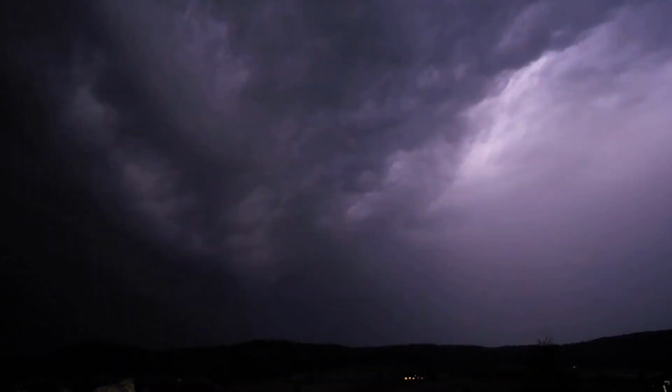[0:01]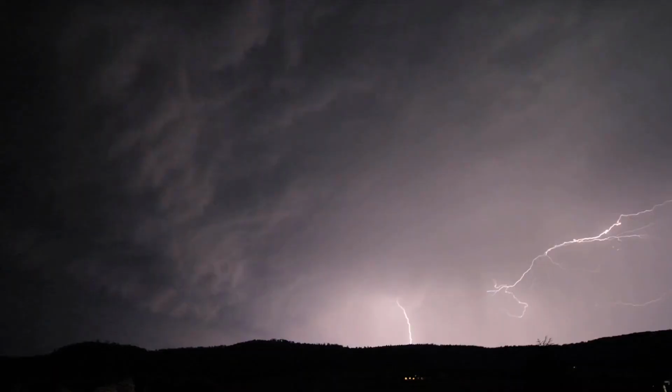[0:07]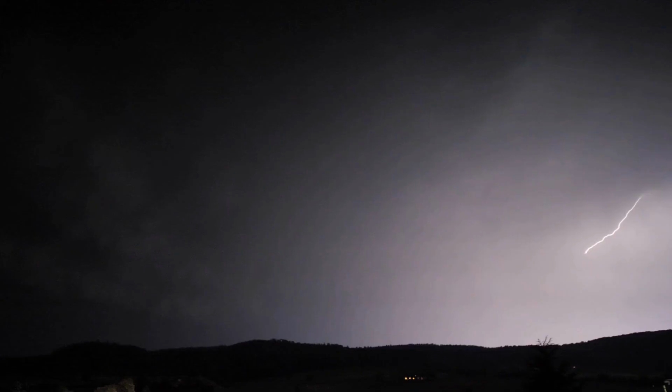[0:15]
To begin with, what actually happens chemically in the atmosphere when lightning occurs? Well, among other things, the immense energy generated by a lightning strike produces nitrogen monoxide from the nitrogen in the air, which then reacts further to form nitrogen dioxide.
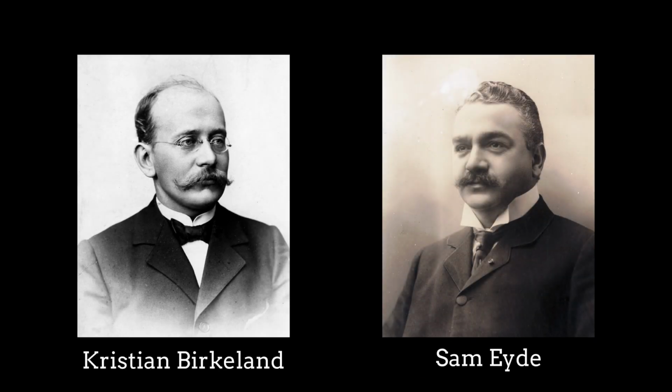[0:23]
In 1903, the Norwegian industrialist and scientist Kristian Birkeland and his business partner Sam Eyde took advantage of this process and developed a method for converting atmospheric nitrogen into nitric acid, which served as a basis for nitrate fertilizers.
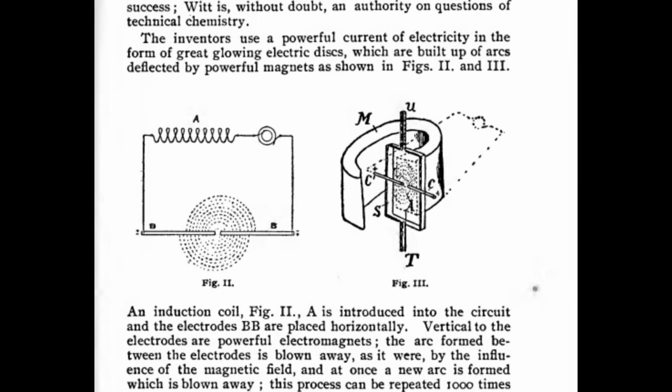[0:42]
An electrical arc was formed between two coaxial water-cooled copper tube electrodes powered by a high-voltage alternating current of 5 kV at 50 Hz. A strong static magnetic field generated by a nearby electromagnet spread the arc into a thin disk by the Lorentz force.
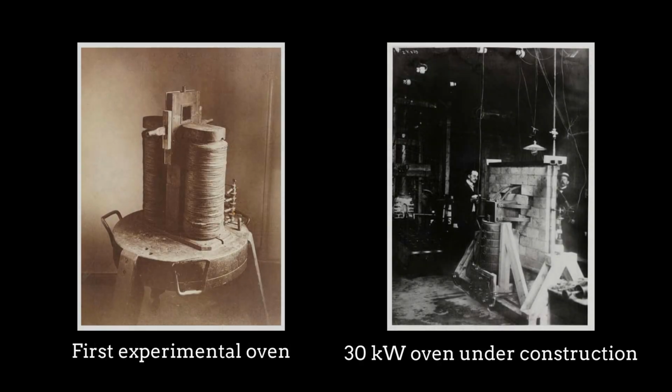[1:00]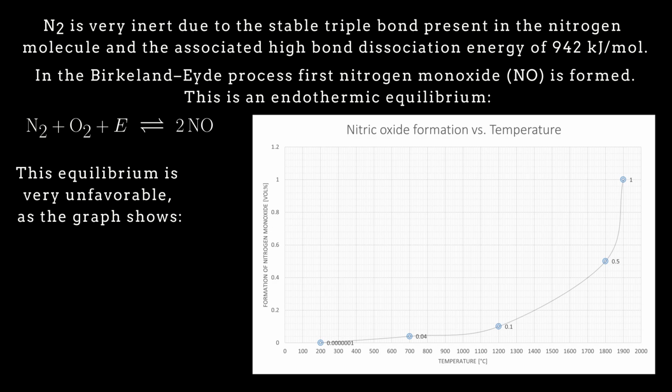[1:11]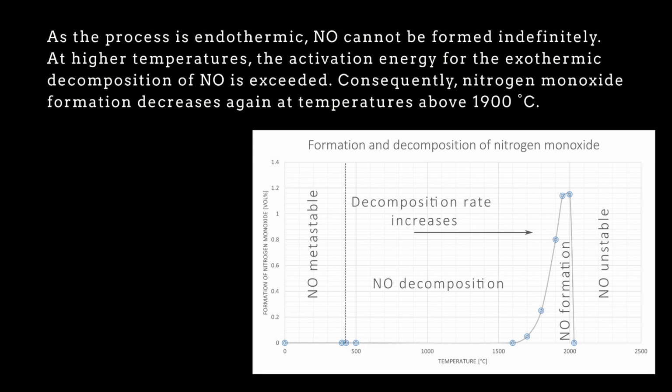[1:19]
Before we start building a fully automatic and programmable Birkeland-Eyde device, let's first take a closer look at what actually happens here chemically. As can be seen here, arc temperatures above 1900 degrees Celsius are rather counterproductive, which is remarkable.
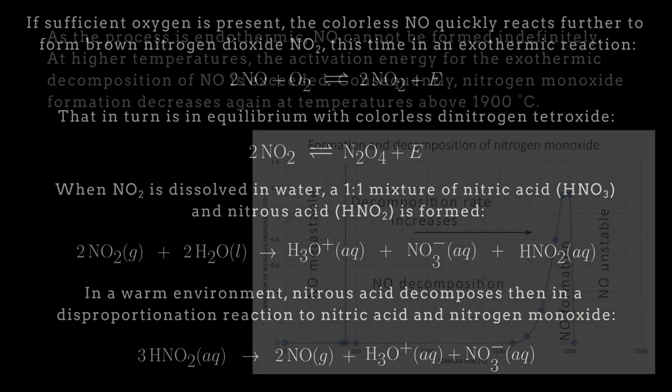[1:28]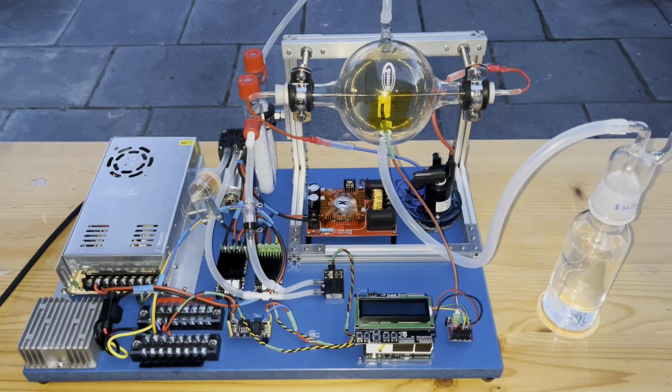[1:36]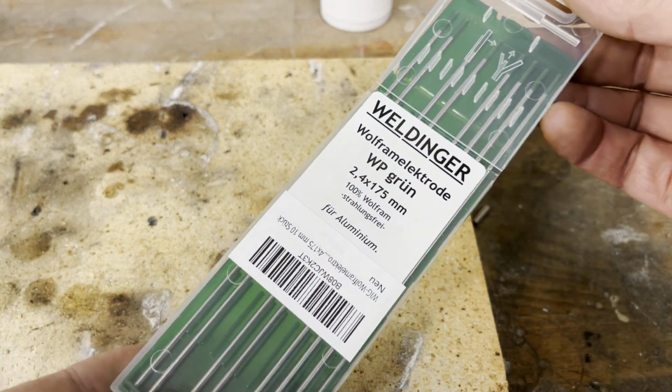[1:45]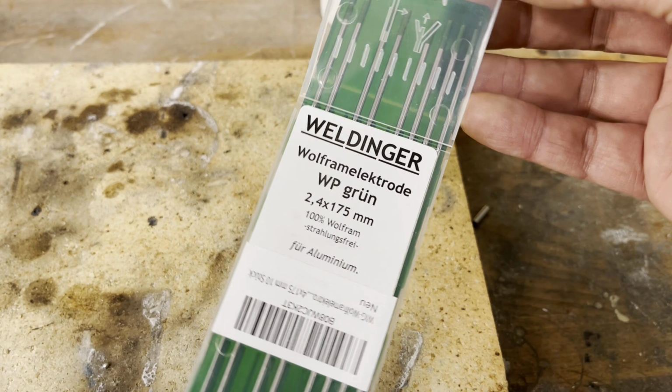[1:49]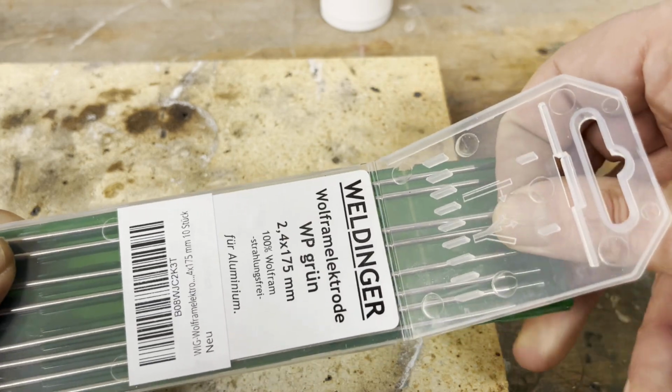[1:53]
Okay. Now that the dust has settled, I will start by showing you the device I built. I began the construction with the electrodes, which consist of tungsten welding electrodes. Tungsten is the chemical element with the highest melting and boiling point.
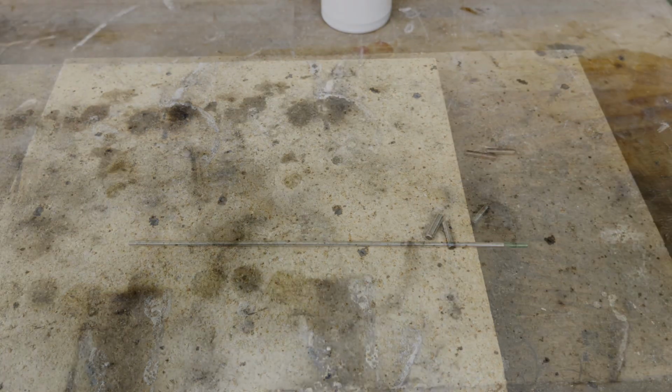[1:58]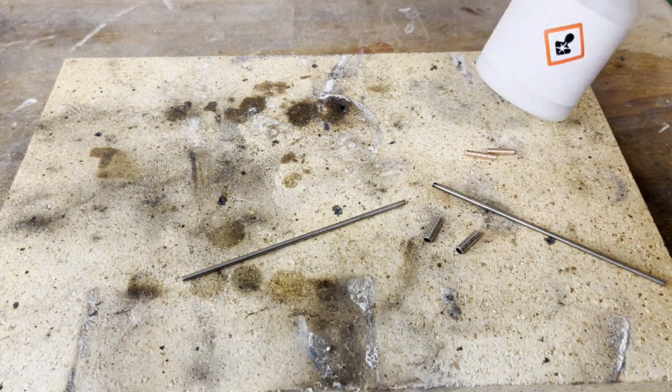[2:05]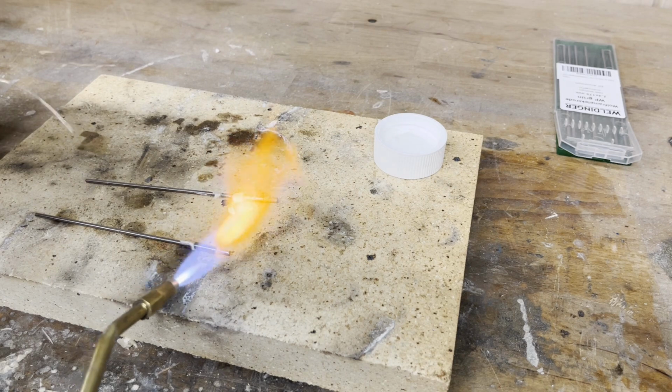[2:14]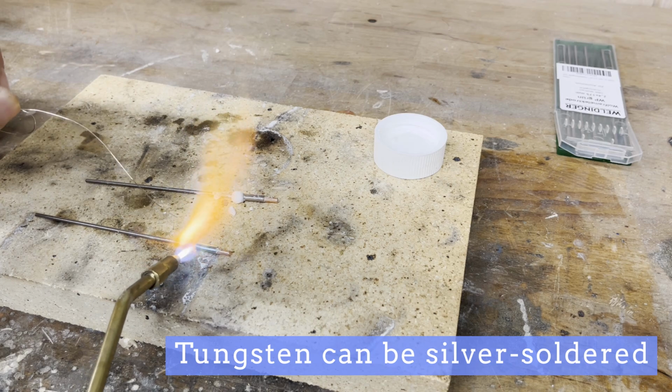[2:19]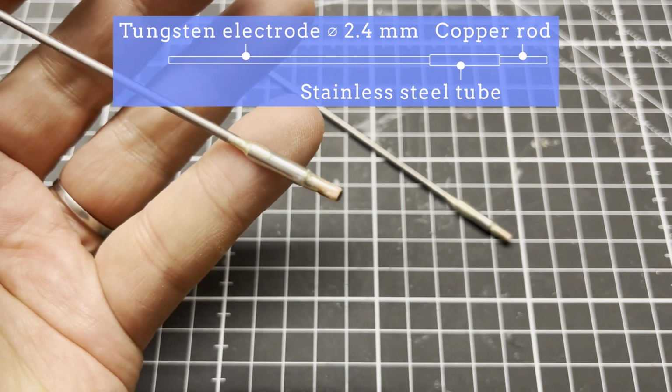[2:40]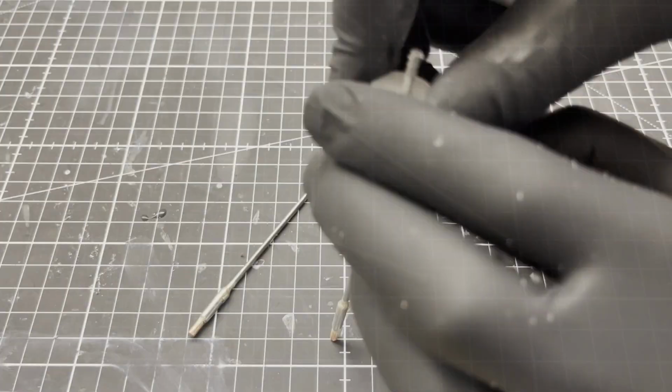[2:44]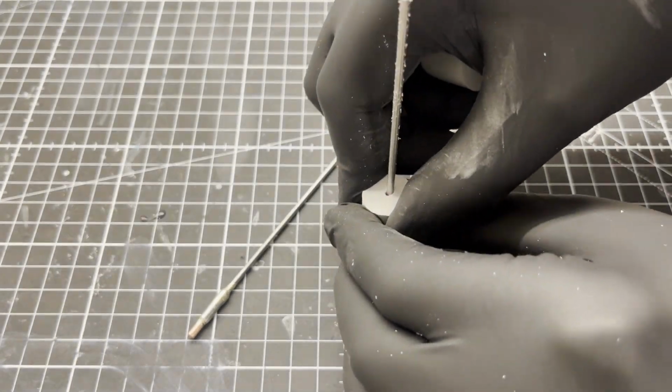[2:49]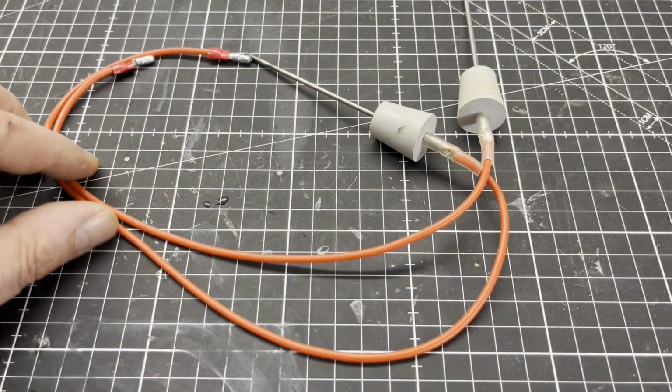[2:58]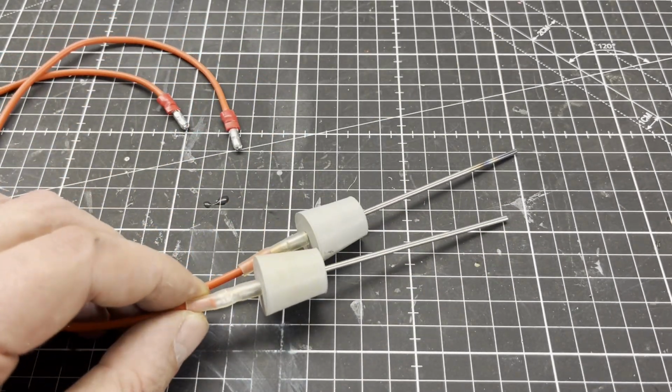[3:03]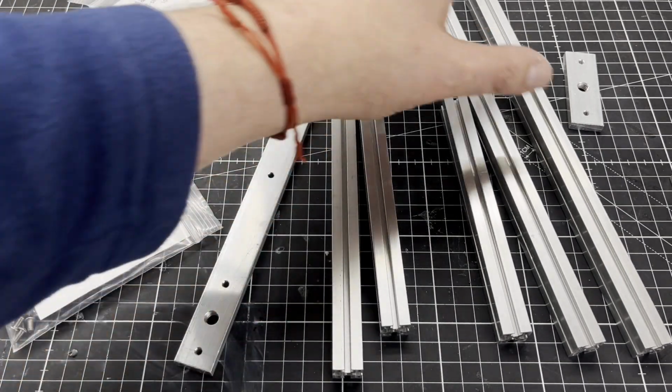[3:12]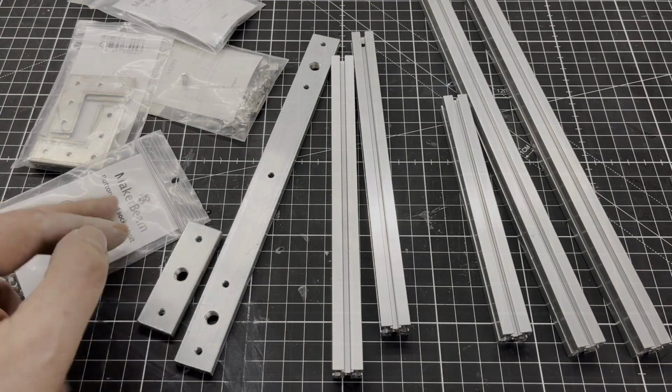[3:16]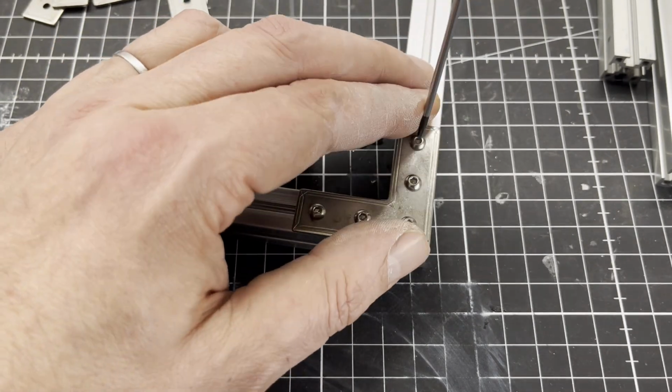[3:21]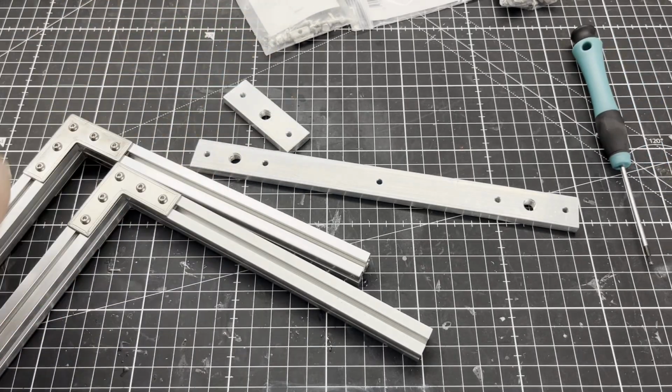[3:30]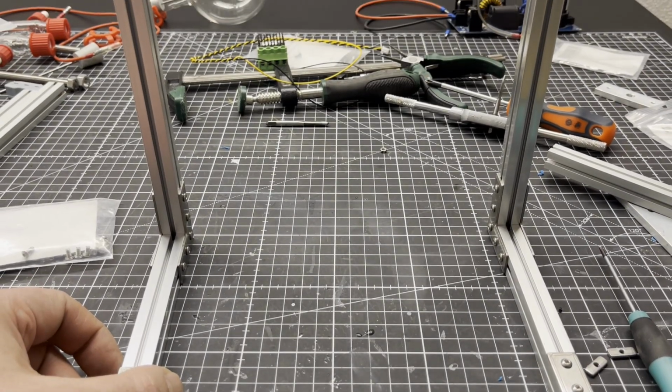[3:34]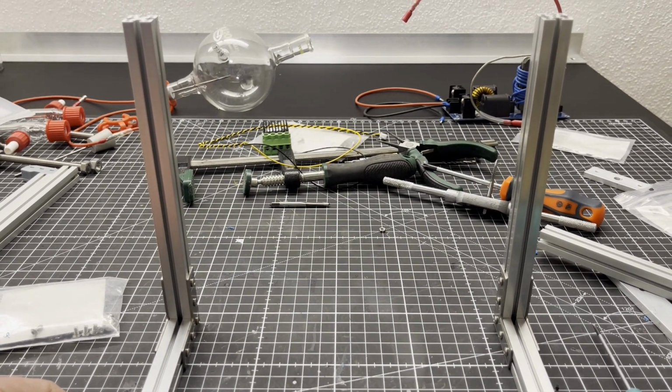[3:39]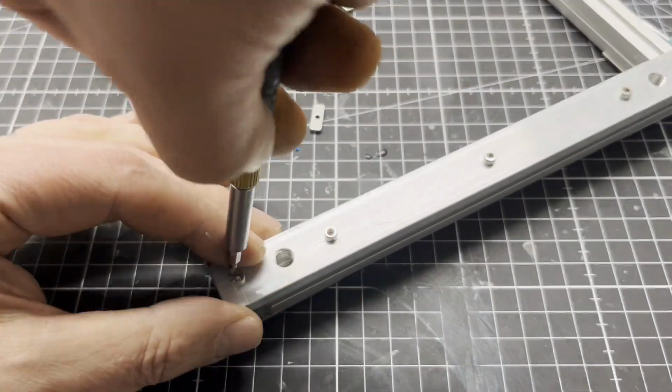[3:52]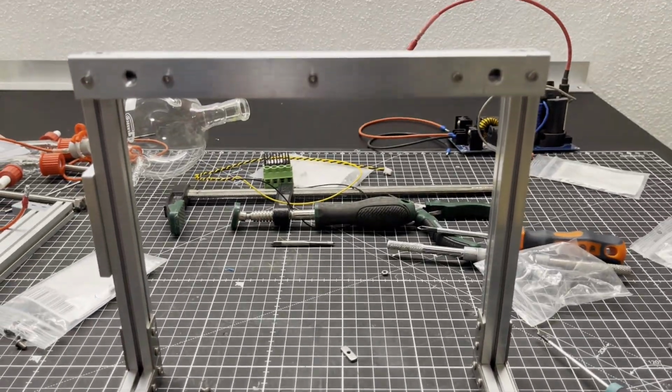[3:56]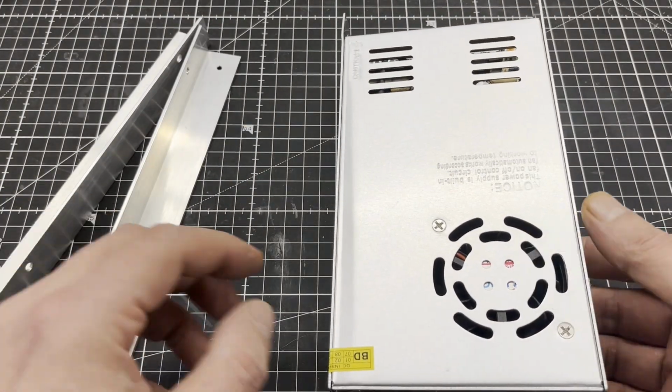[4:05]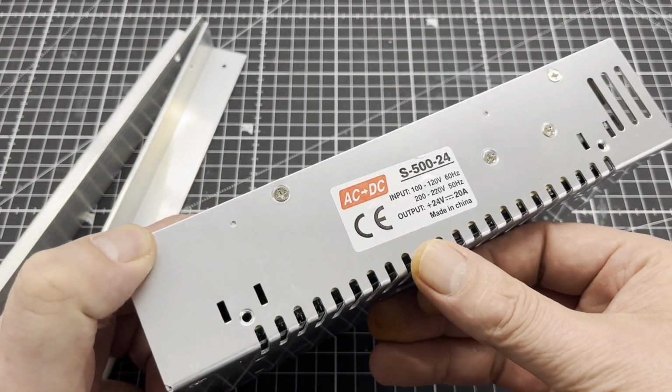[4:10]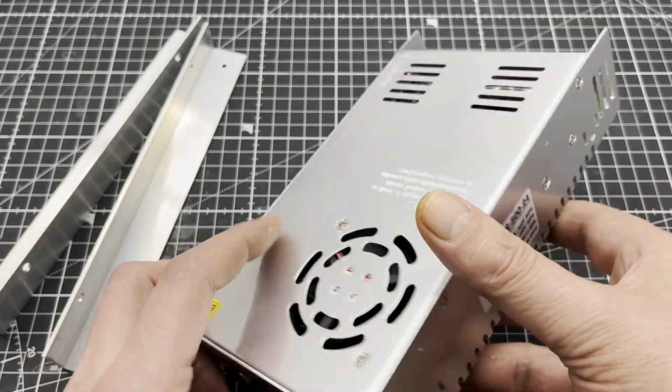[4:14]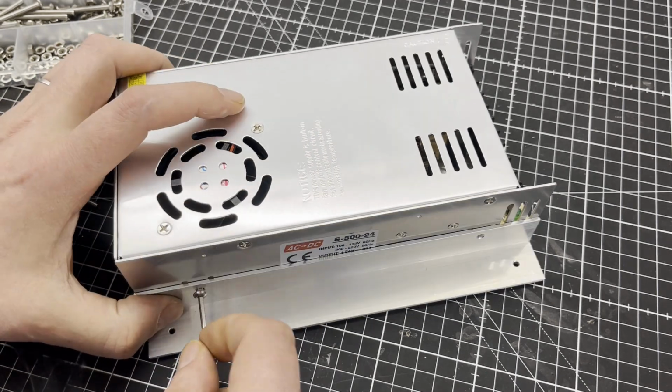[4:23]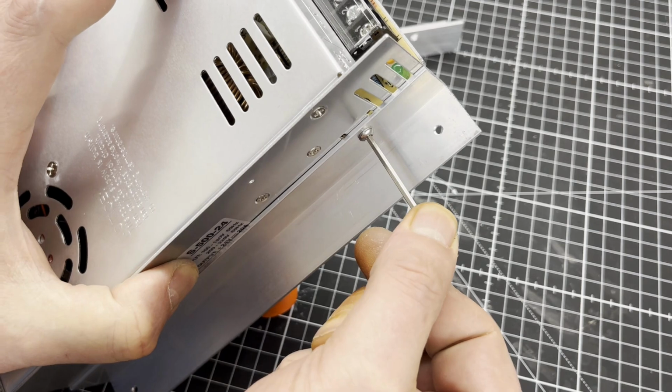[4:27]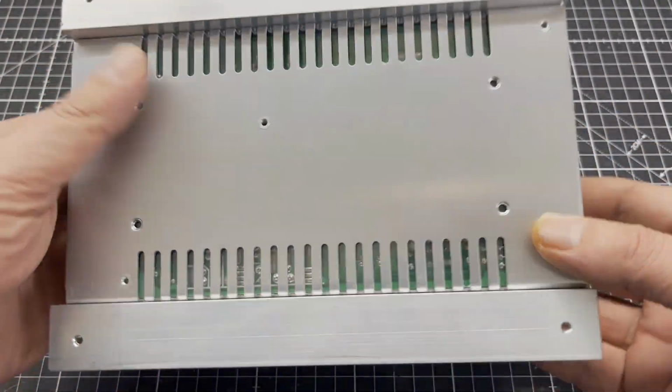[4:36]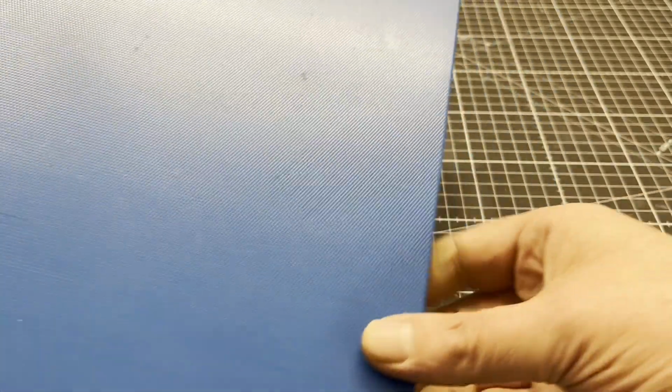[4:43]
To build the reaction flask mount, I used maker beam and two custom parts made from aluminum flat bar for the pipe clamps. And two more customized aluminium mounting brackets for the main power supply. A plastic kitchen board measuring 50 by 30 by 2 cm served as a base plate.
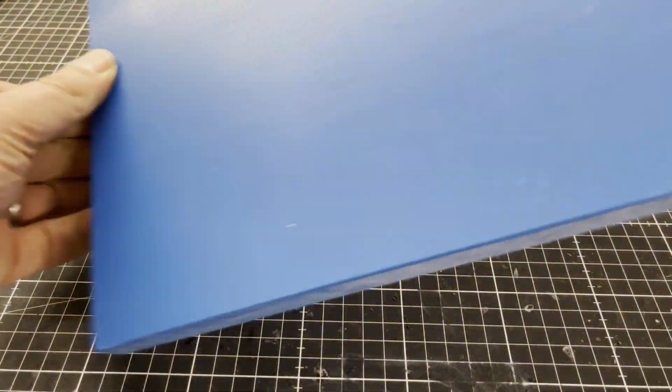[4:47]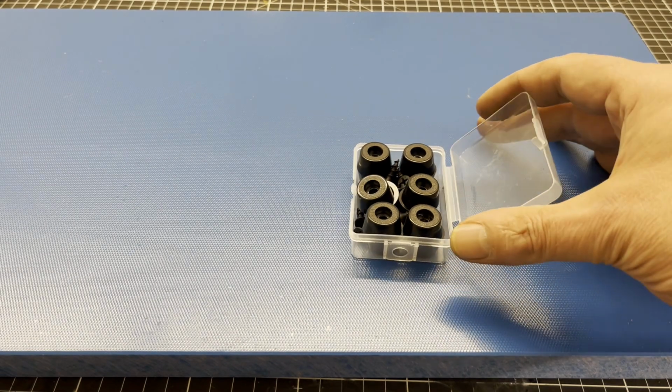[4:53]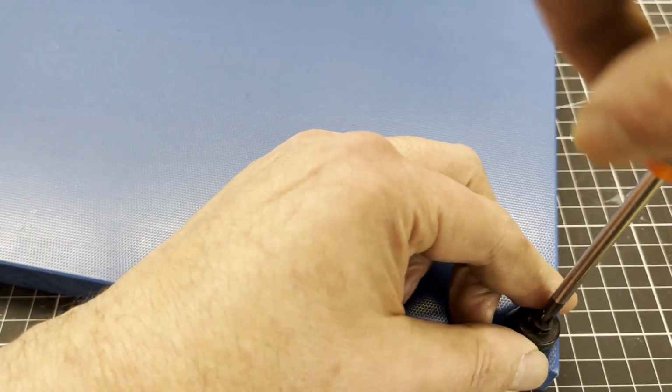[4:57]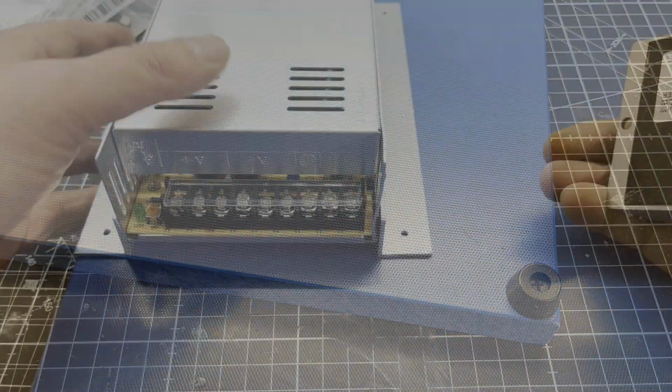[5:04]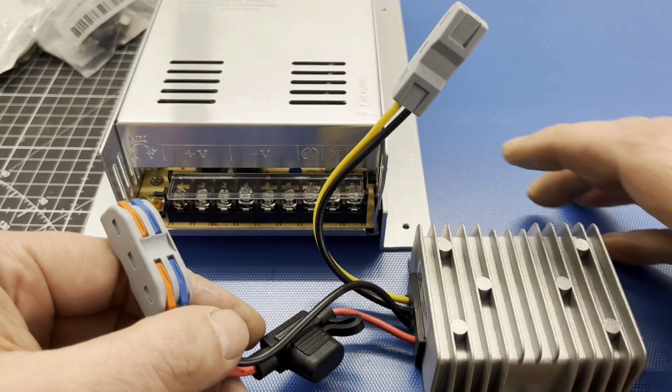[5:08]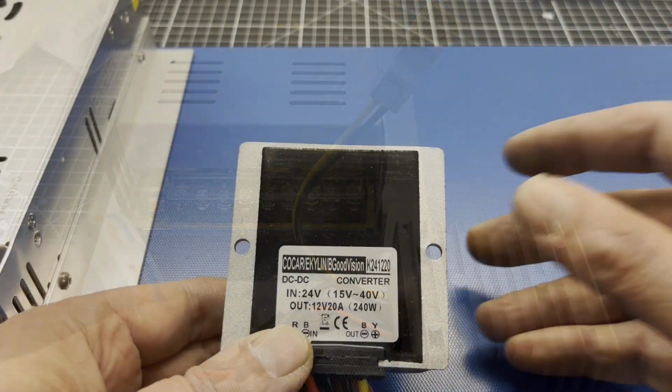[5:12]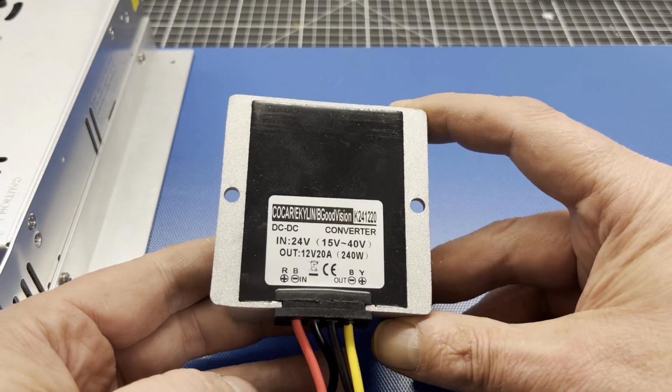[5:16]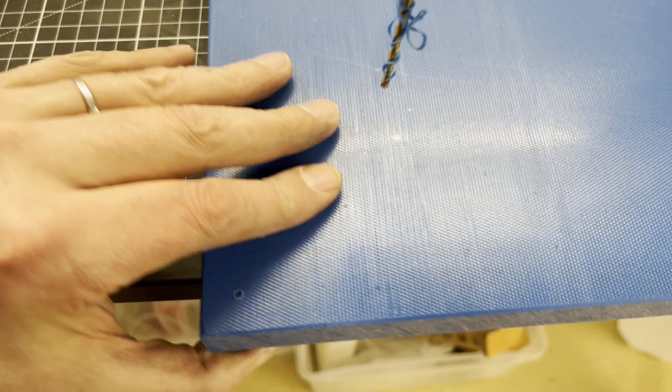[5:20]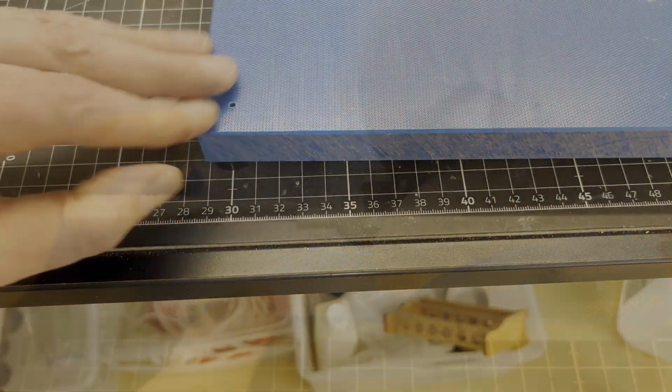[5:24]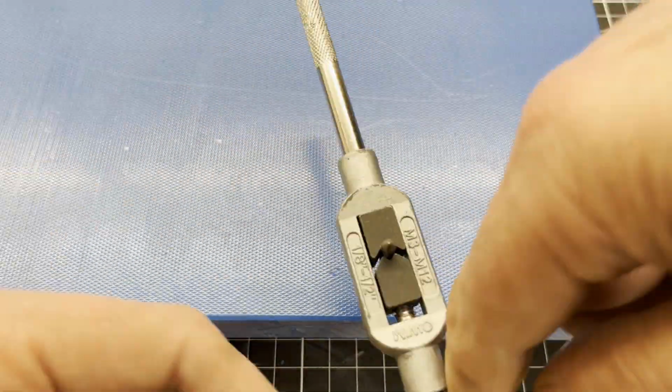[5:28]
This part here is a 24 to 12 volts DC-DC converter and a bit oversized, but I still had it lying around in my lab. The kitchen board, which is made of polypropylene, is easy to machine. Thread cutting is also no problem.
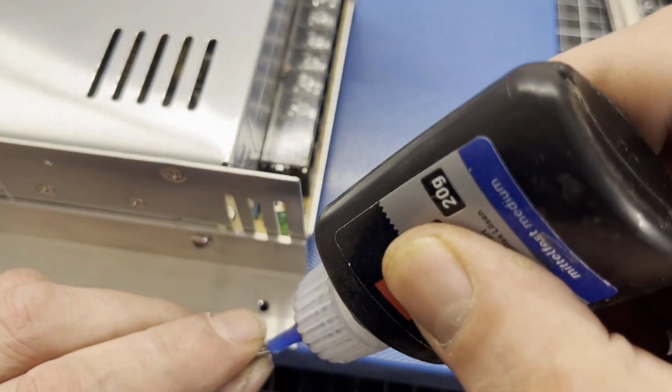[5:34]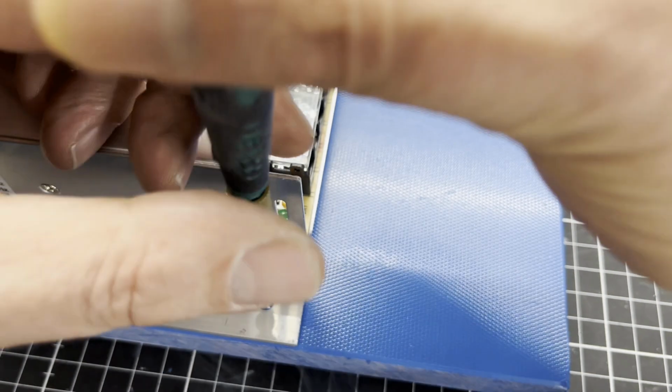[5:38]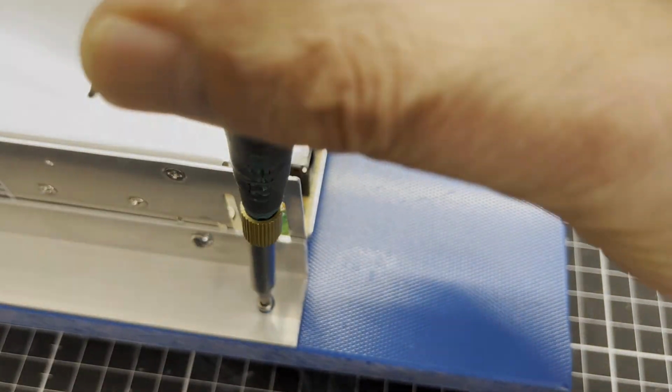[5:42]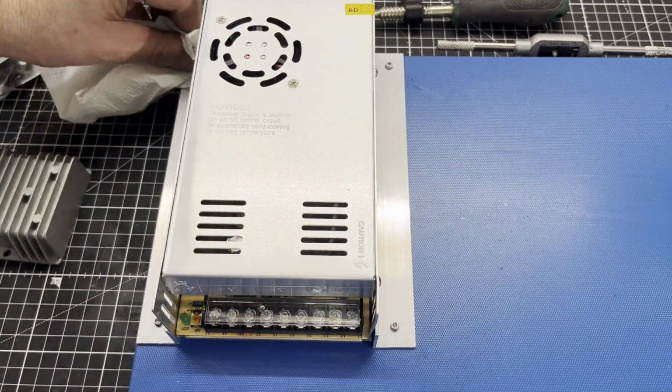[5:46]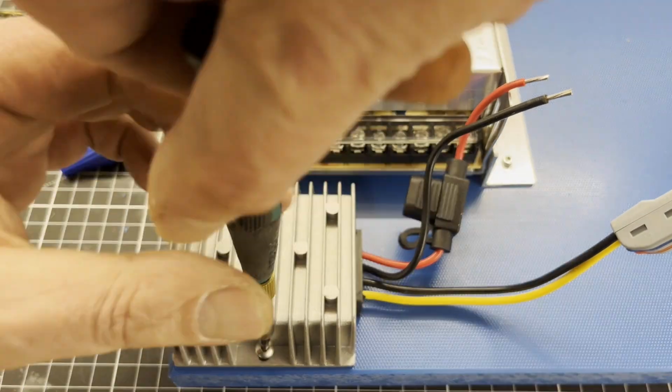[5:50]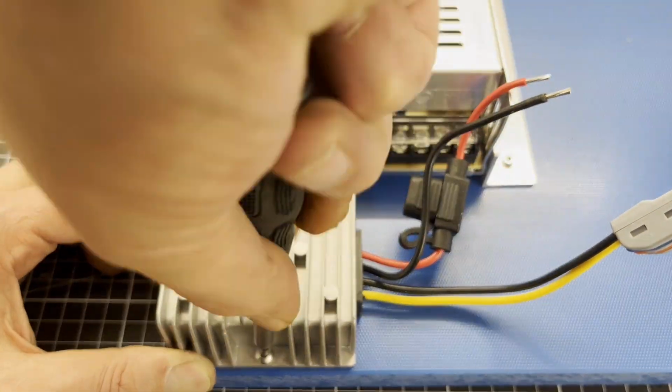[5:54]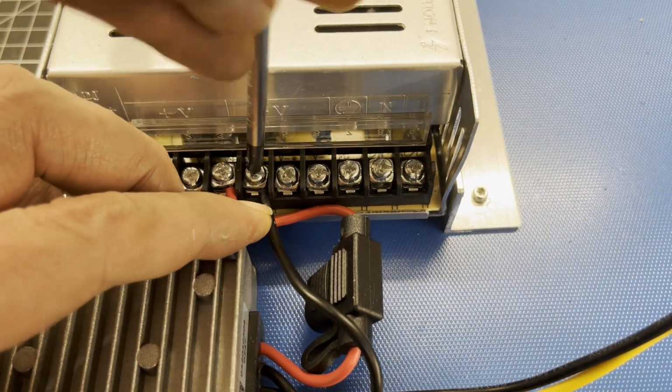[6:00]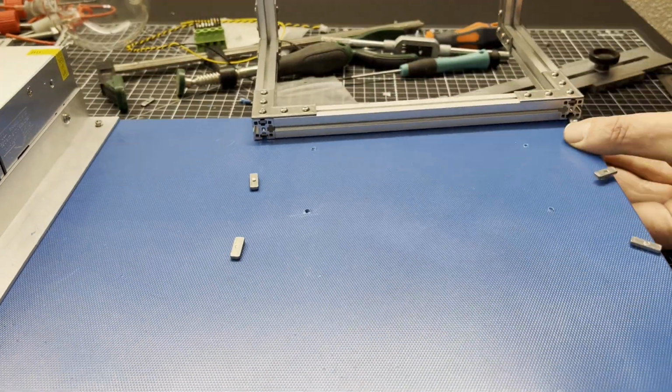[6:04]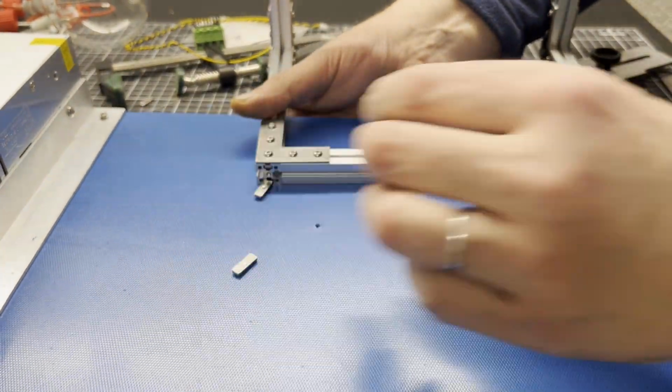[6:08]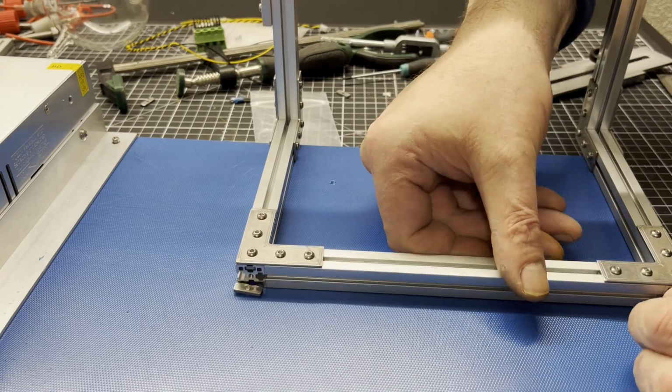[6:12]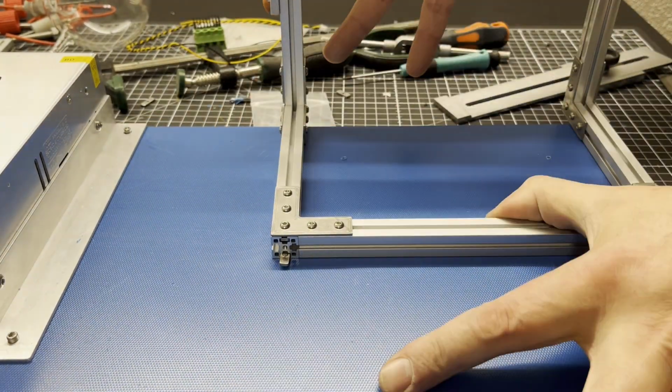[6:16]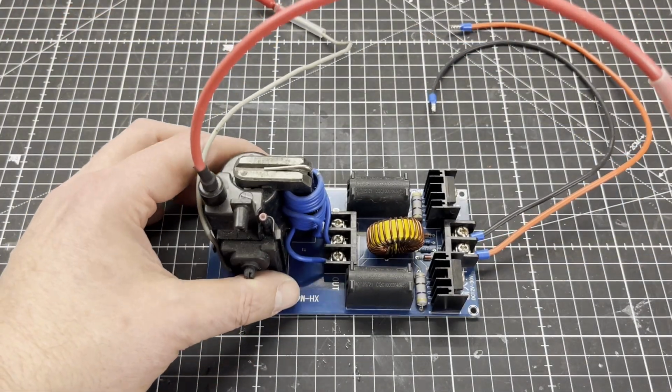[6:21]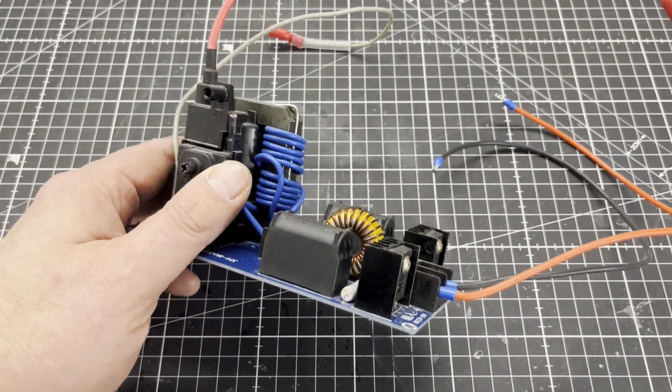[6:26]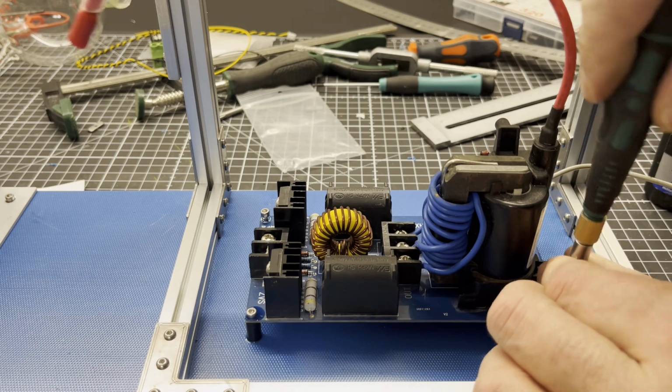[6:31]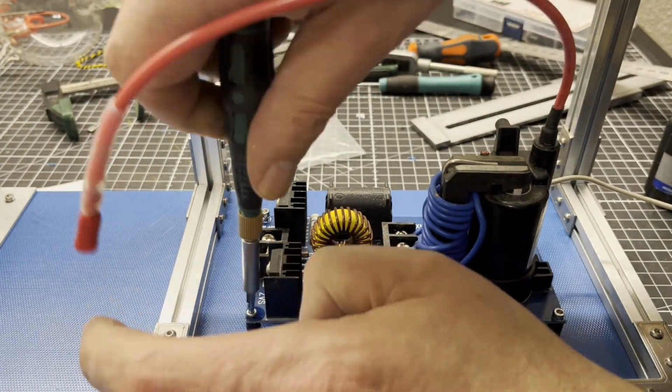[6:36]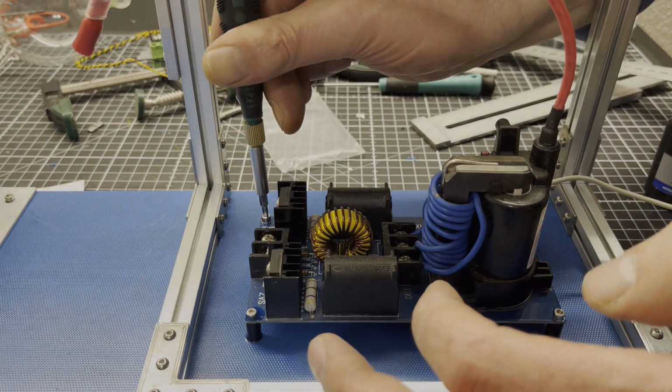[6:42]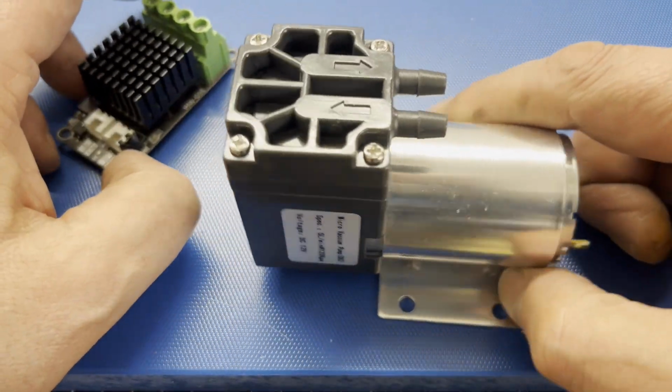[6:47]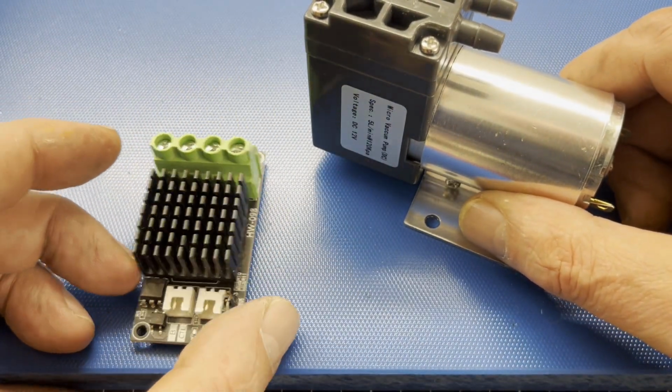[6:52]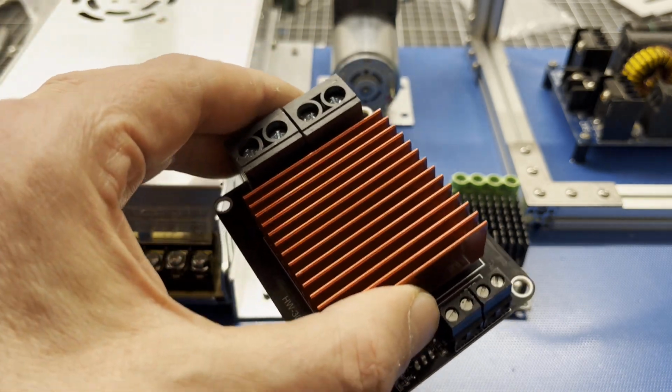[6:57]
I used a ZVS driver with a TV flyback transformer as a high voltage source. The circuit draws about 10 amps at 24 volts on the input side. Here you can see the air pump and a power MOSFET breakout board, normally used to control the heating bed of a 3D printer. Another power MOSFET drives the high voltage generator.
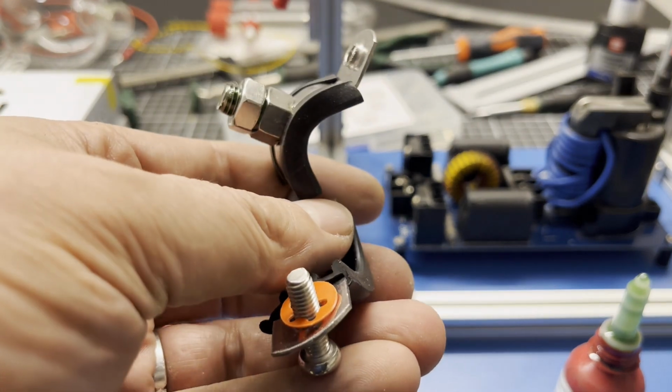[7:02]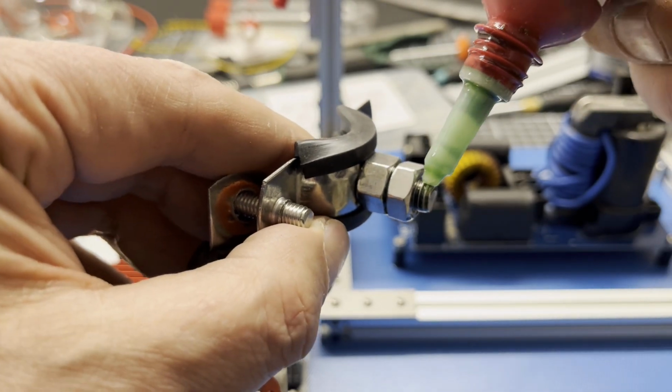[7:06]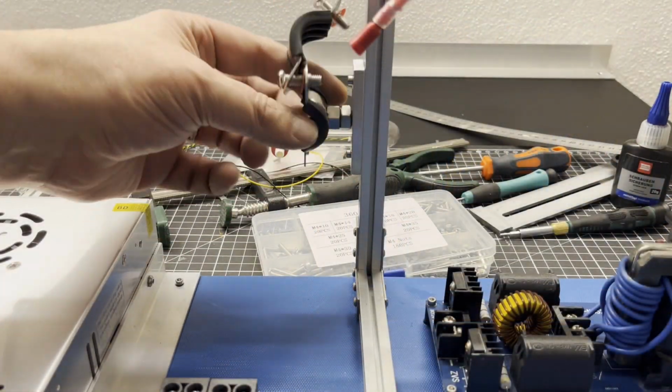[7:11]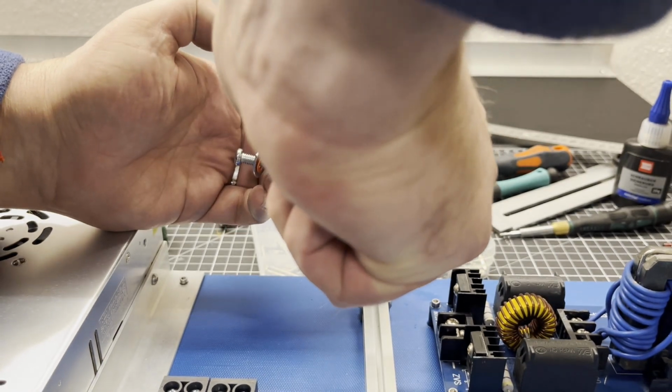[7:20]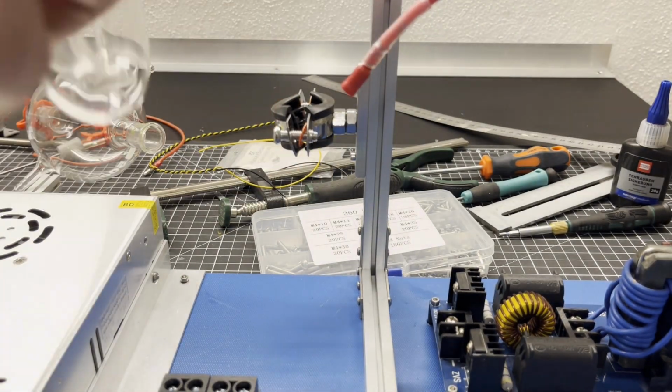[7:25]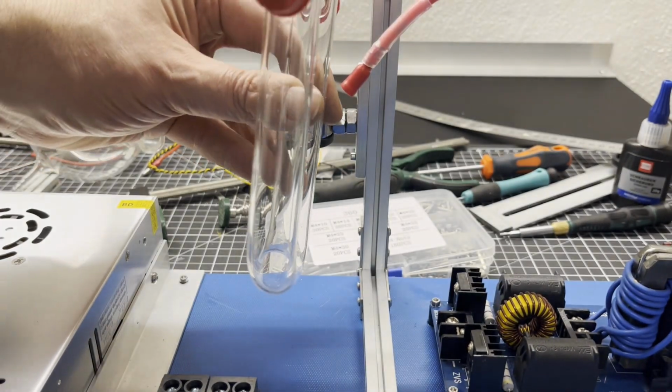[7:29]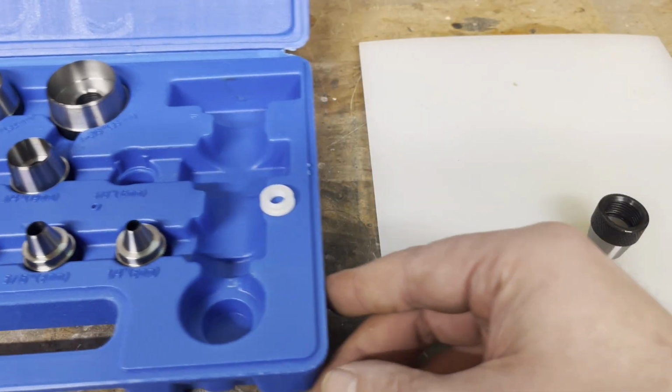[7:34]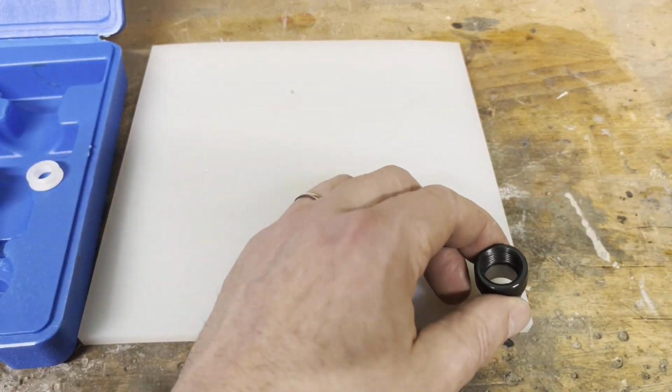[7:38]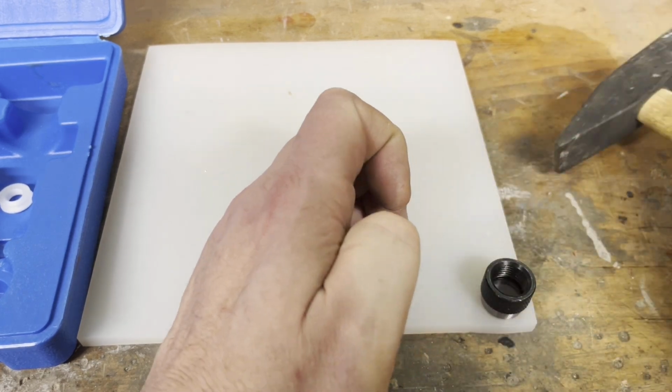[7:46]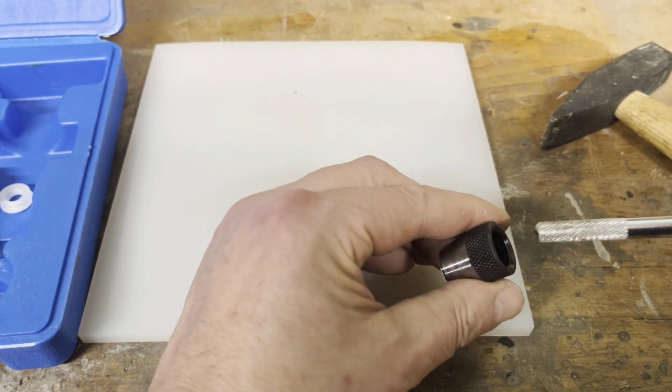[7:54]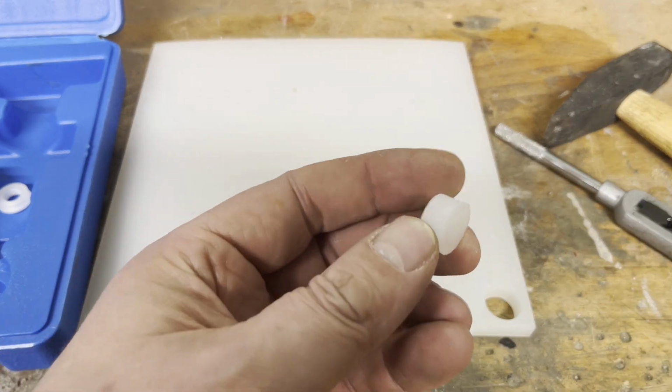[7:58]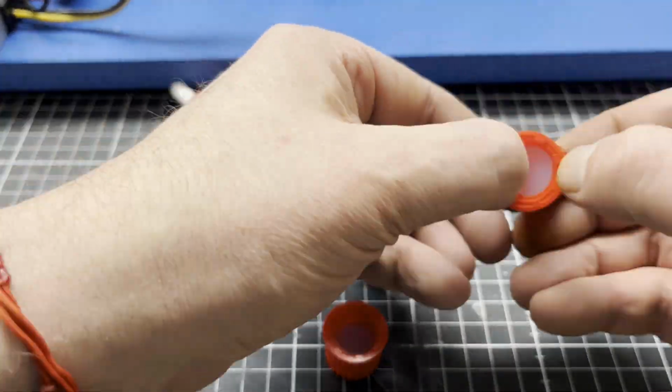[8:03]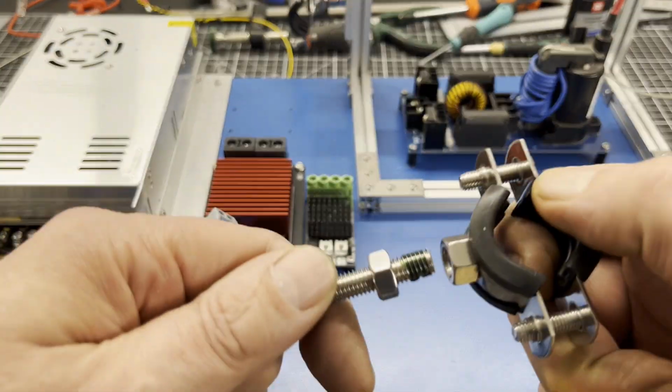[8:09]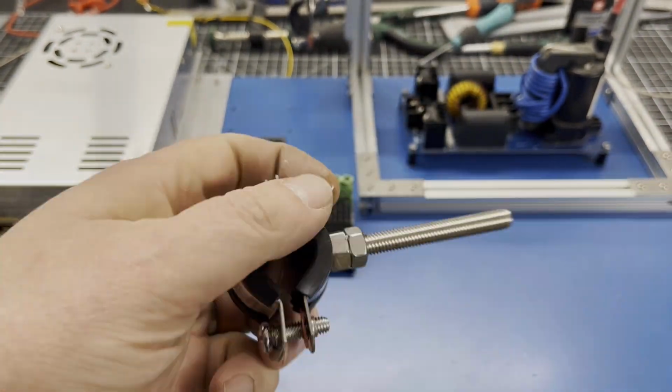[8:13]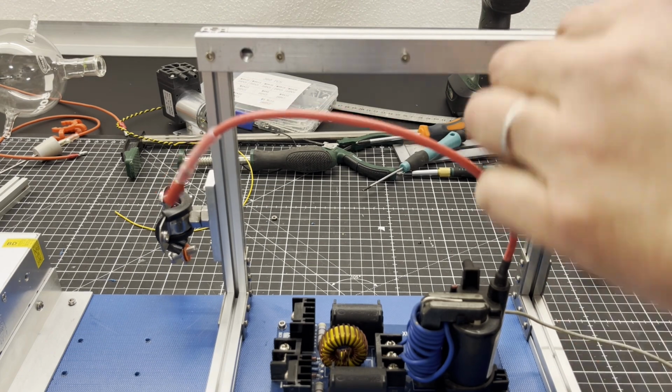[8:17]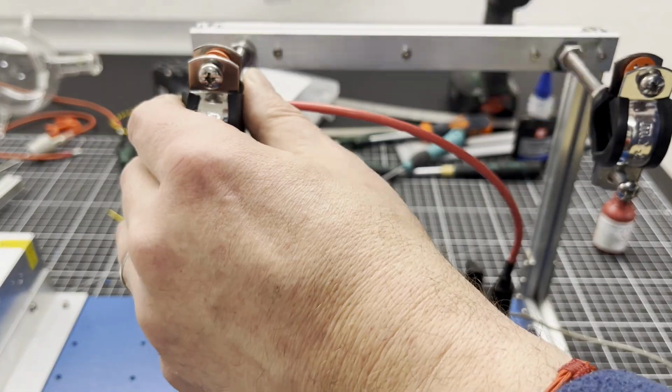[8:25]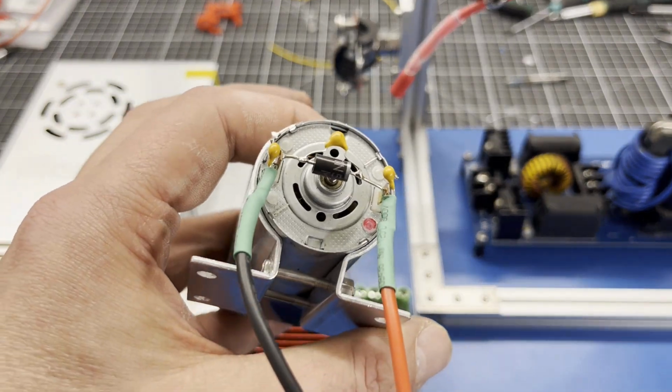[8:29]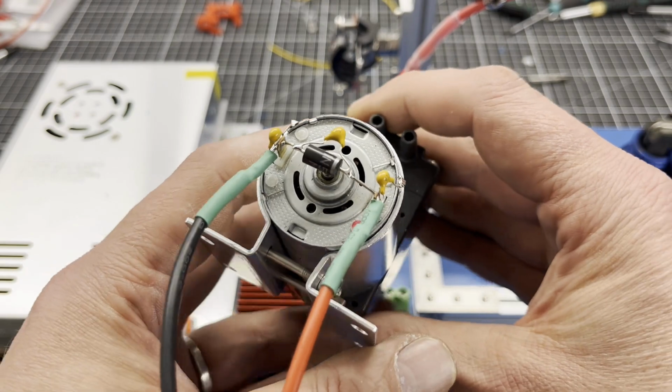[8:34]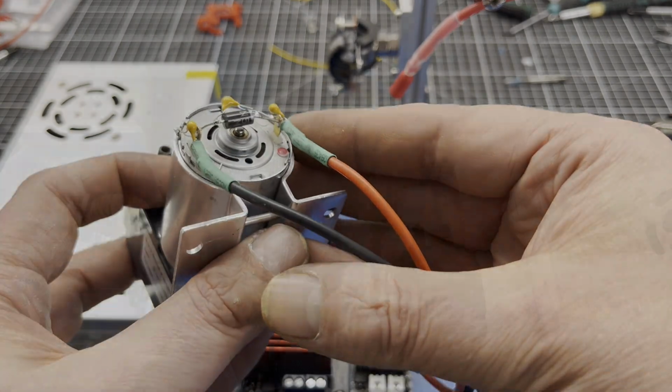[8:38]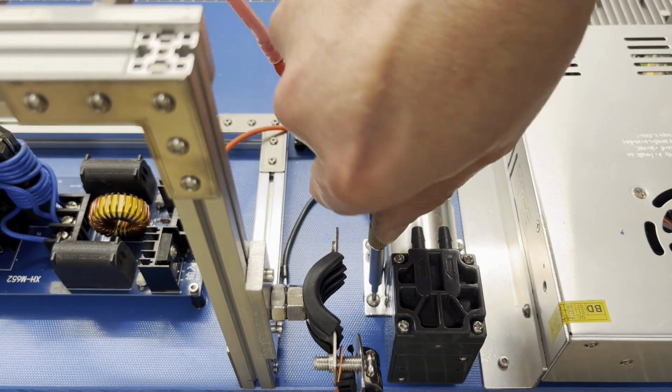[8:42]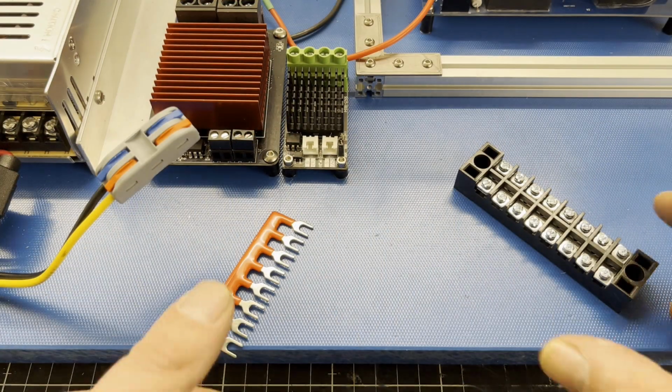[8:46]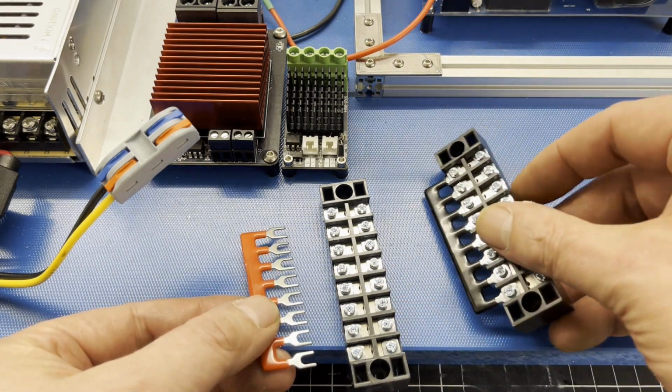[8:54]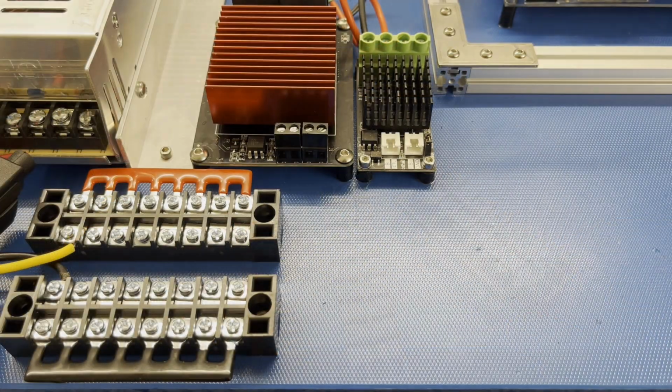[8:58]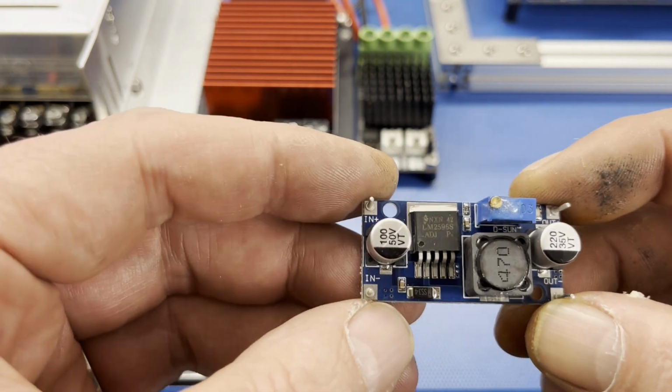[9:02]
The blind seals for the U-shaped drying tube were made from 4mm thick silicon mat. The pump motor was suppressed by 3 ceramic capacitors and fitted with a flyback diode to protect the MOSFET from high voltage peaks. Another DC-DC converter to convert 12 volts into 5 volts for the microcontroller.
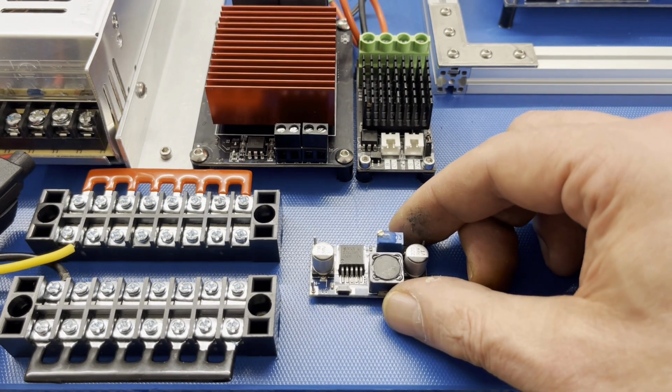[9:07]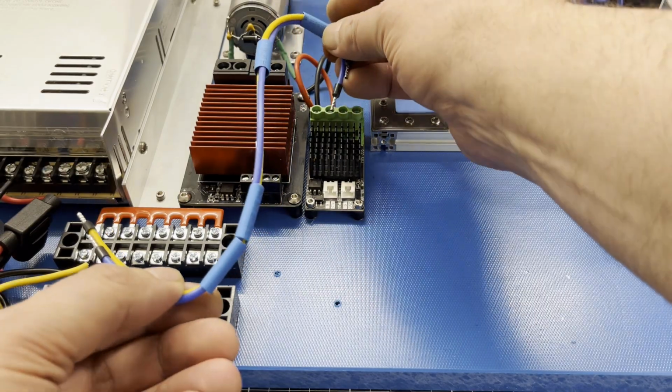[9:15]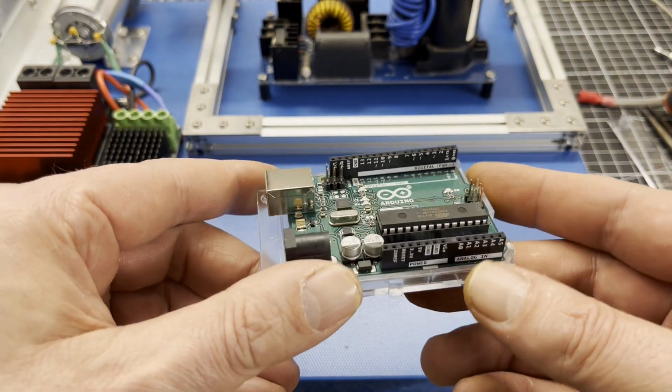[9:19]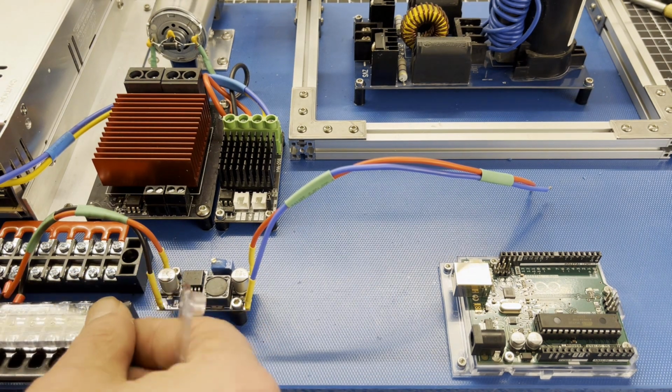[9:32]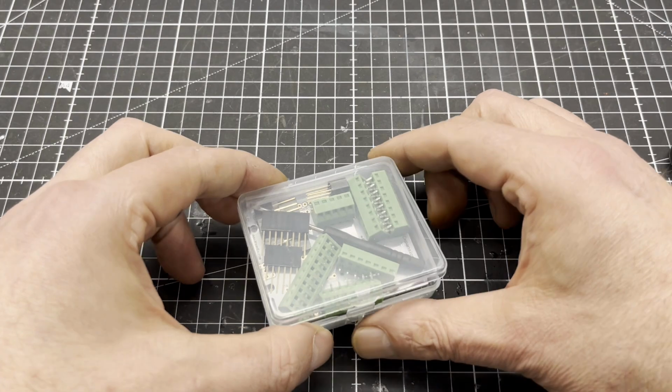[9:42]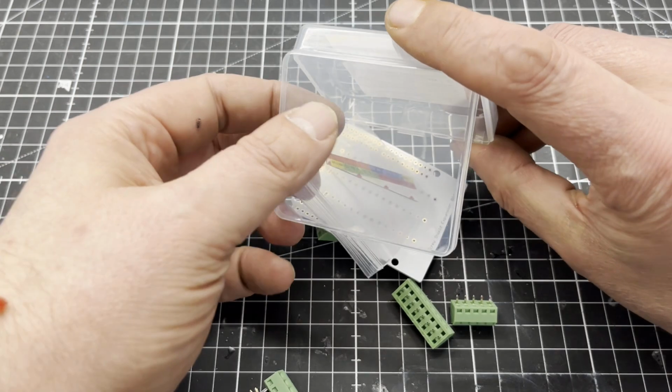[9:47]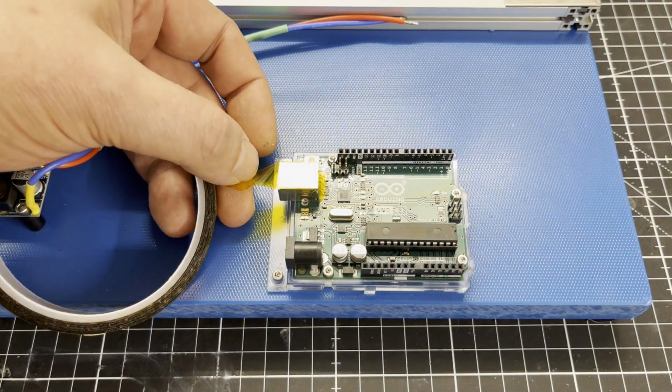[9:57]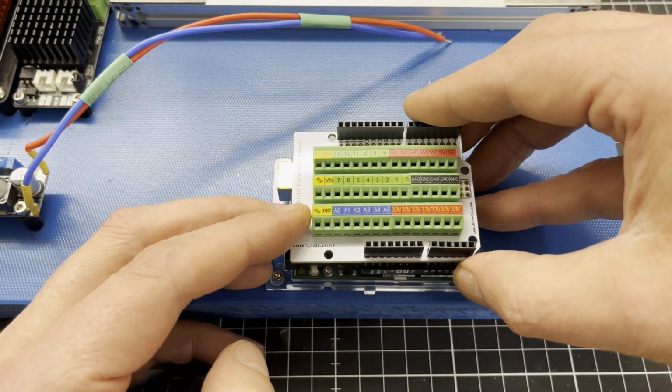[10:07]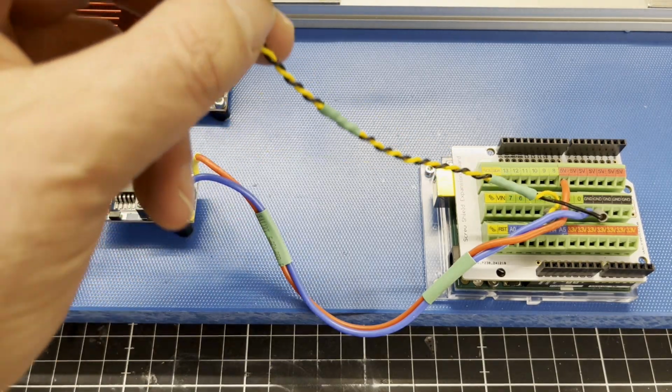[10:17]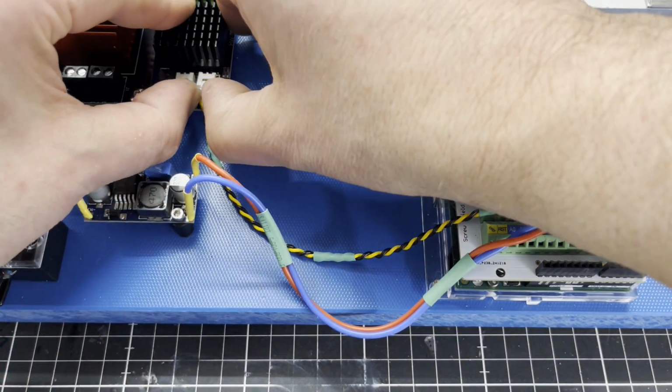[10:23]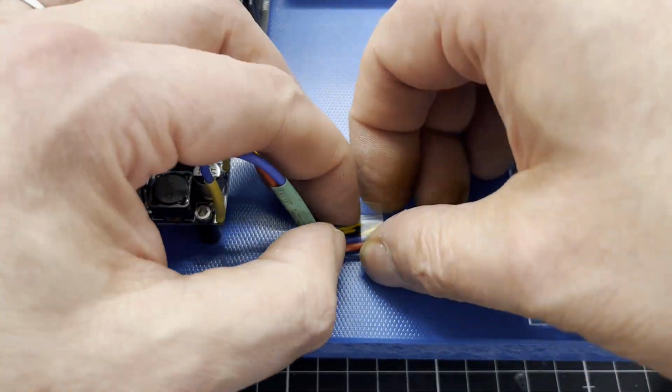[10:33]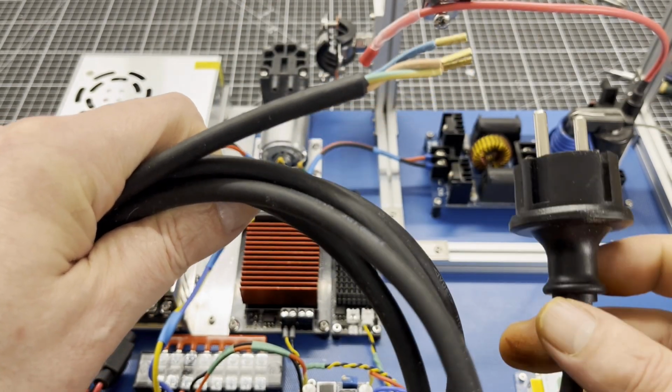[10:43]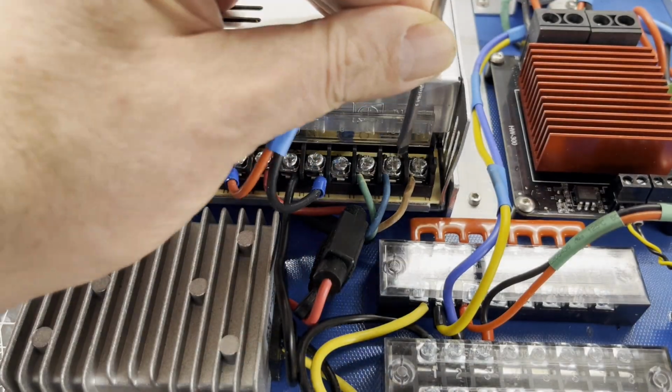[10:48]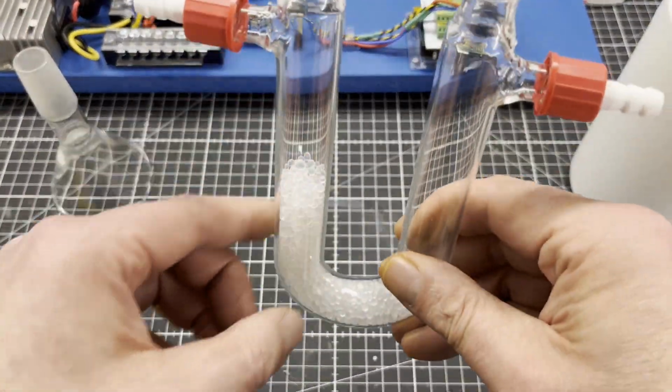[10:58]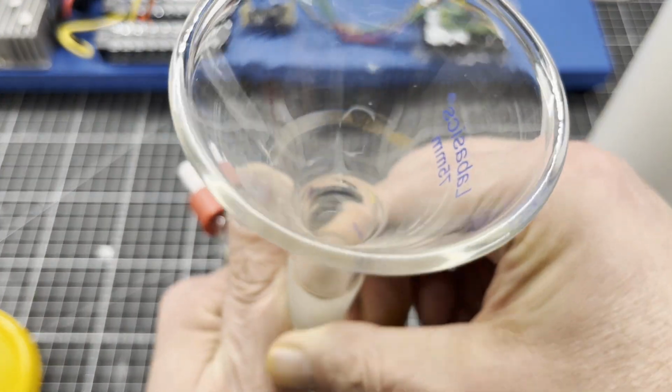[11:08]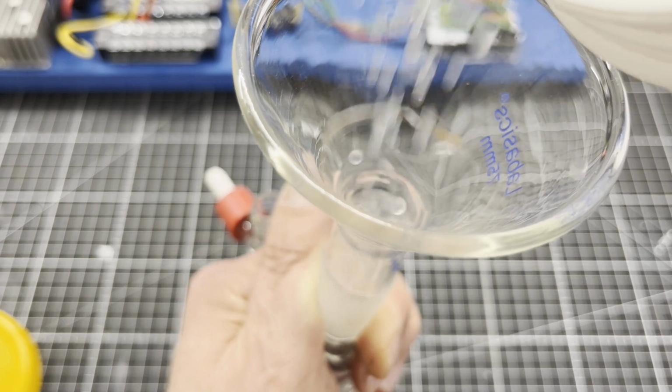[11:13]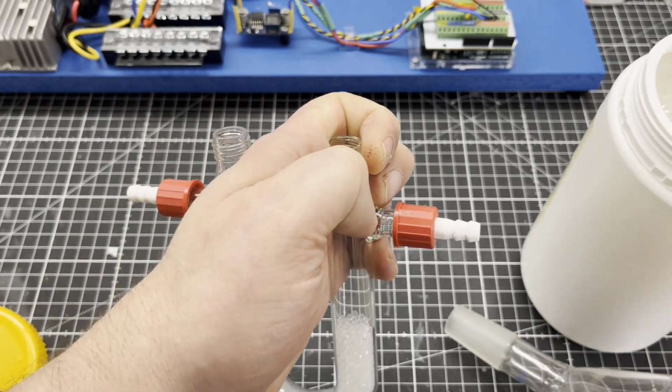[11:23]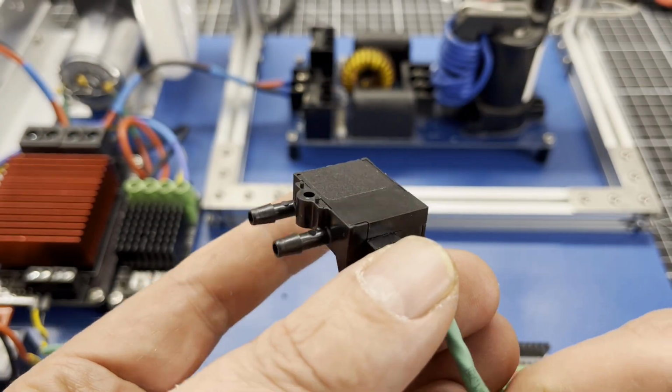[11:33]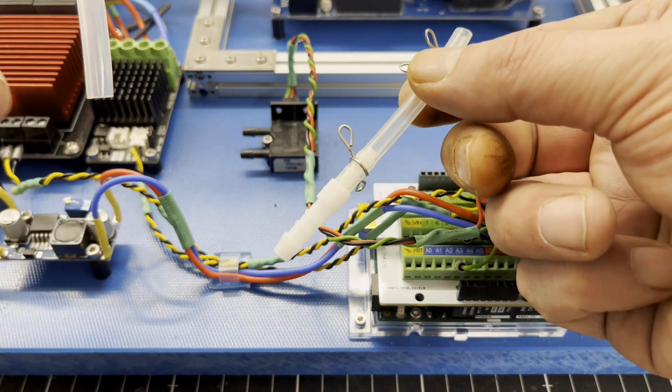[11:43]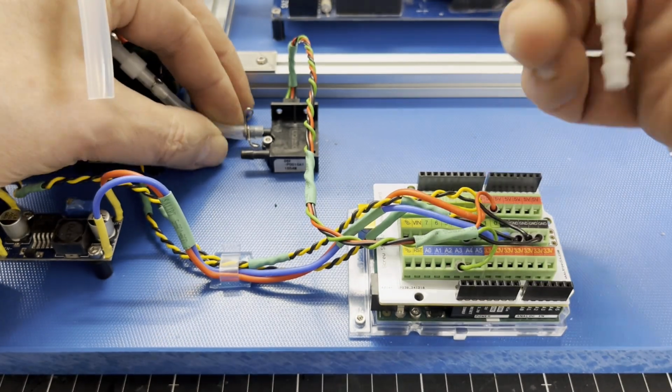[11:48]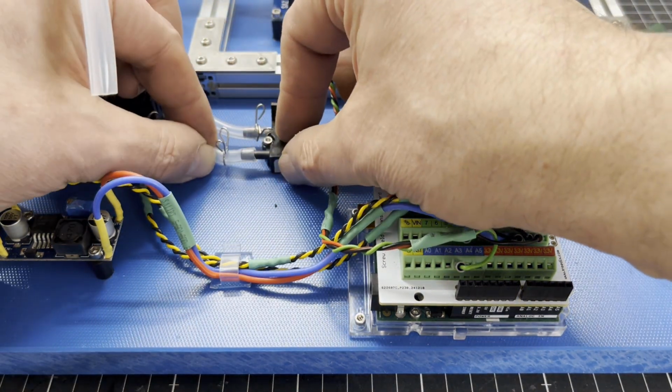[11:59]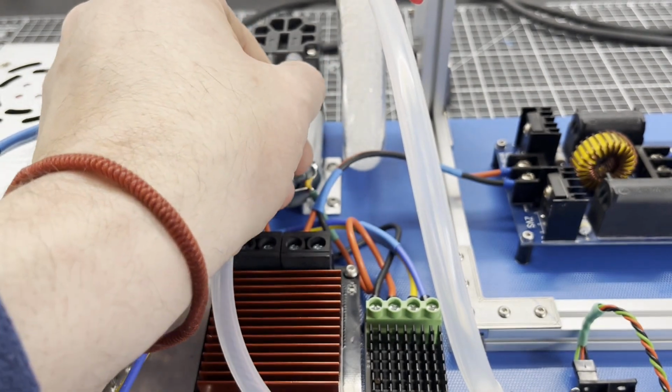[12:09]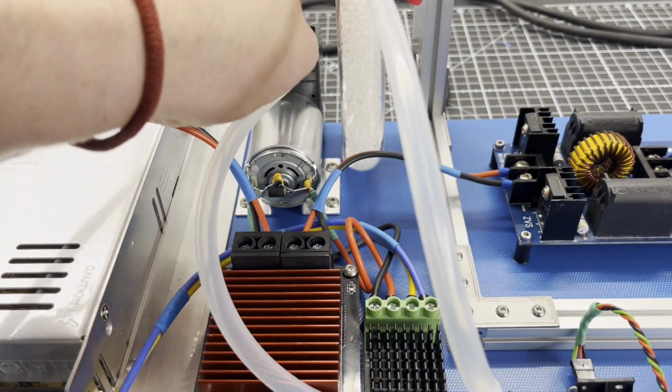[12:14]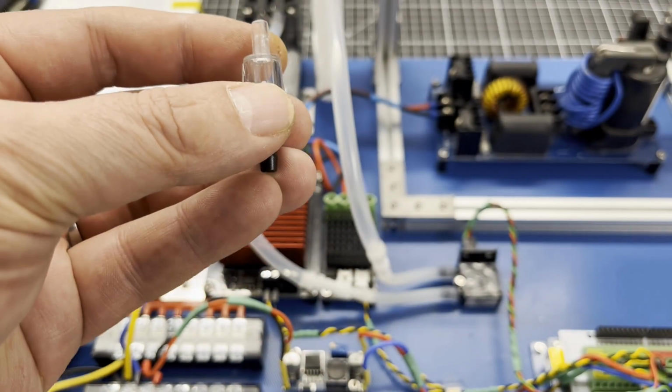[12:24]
An Arduino Uno microcontroller takes over the complete control of the process and the reading of the sensors. A screw shield for the Arduino simplifies the wiring. The drying tube filled with silica gel has a task of drying the incoming air. To measure the volume flow, I bought this mass flow meter from Omron. This one-way valve prevents nitrogen oxides from entering the mass flow meter.
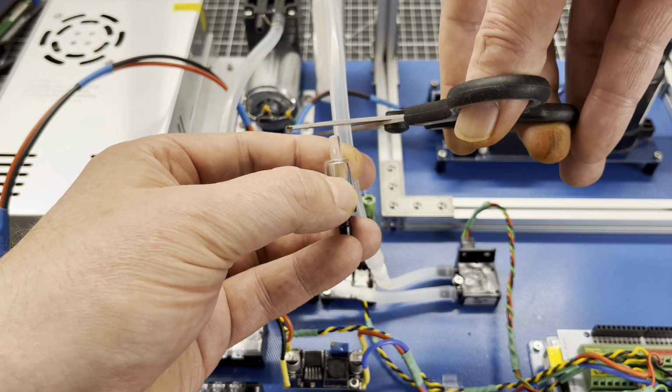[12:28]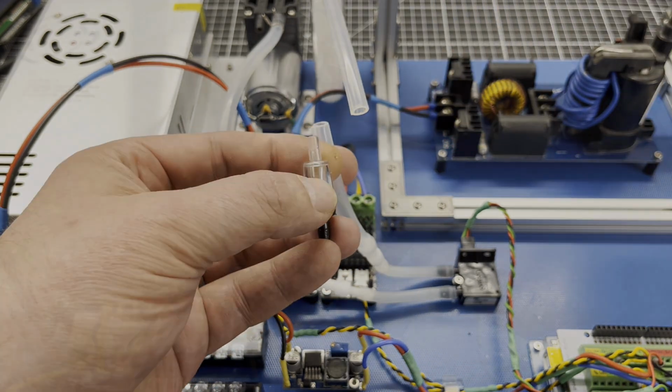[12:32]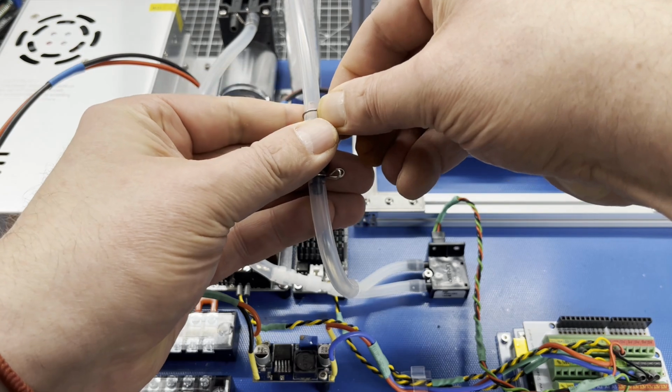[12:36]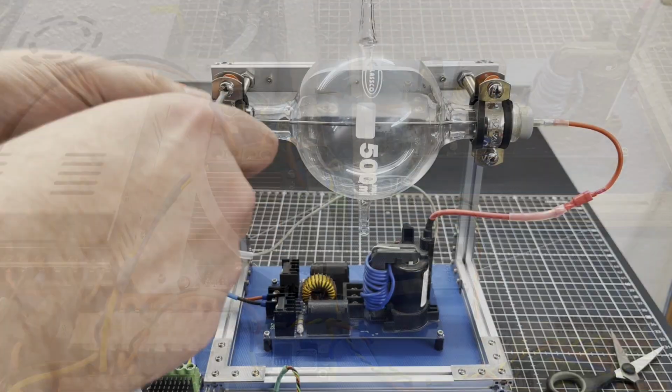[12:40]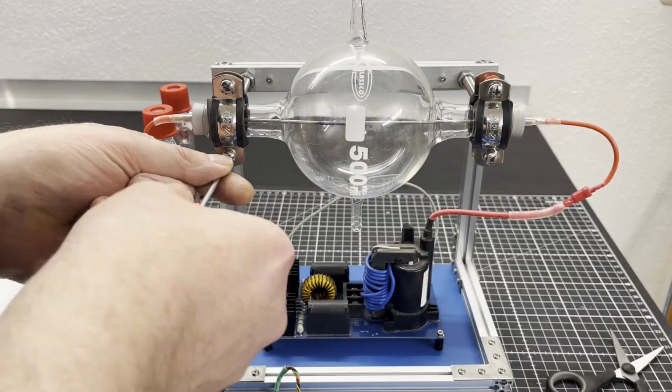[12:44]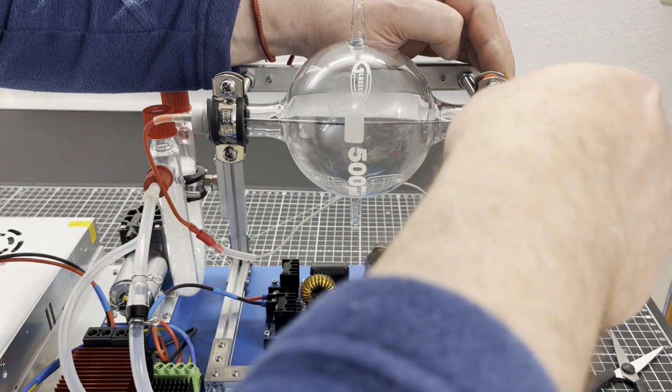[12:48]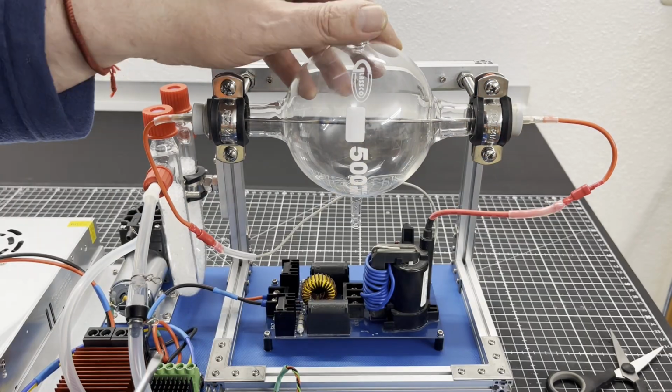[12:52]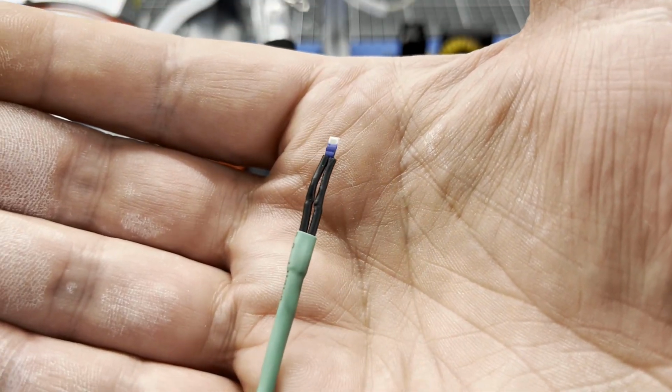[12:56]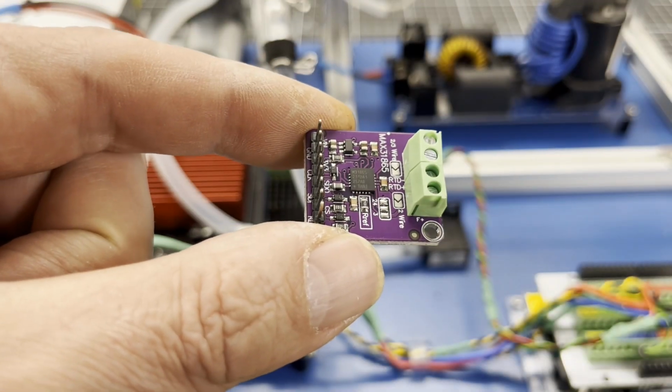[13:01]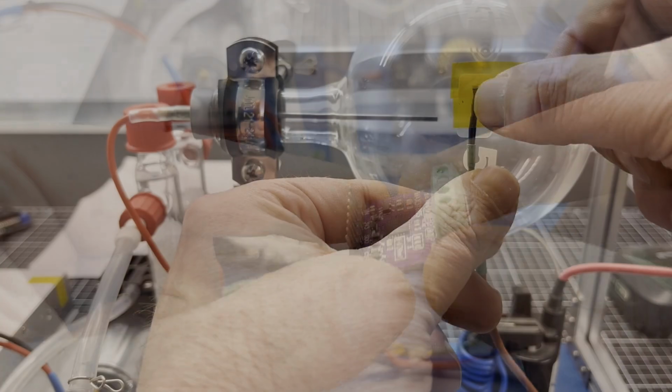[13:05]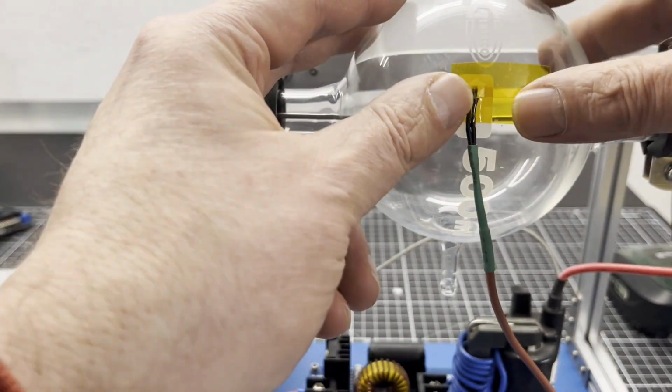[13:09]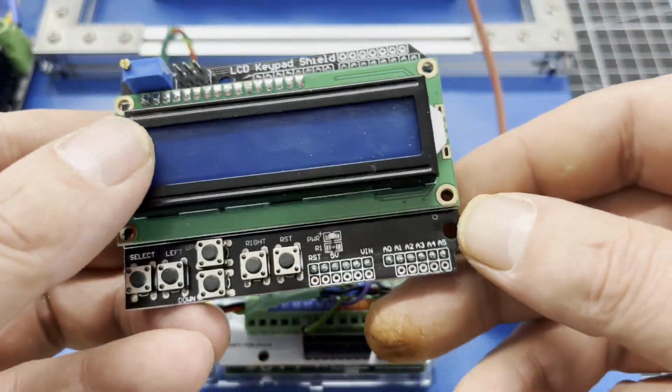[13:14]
A PT100 is used to measure the temperature of the reaction flask. The amplifier for the PT100 is a MAX31865. The temperature sensor was attached to the reaction flask with Kapton tape. After the screw shield was completely wired, I placed an LCD shield on top of it.
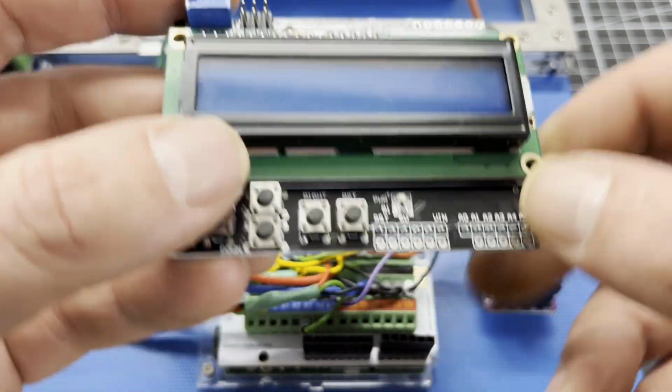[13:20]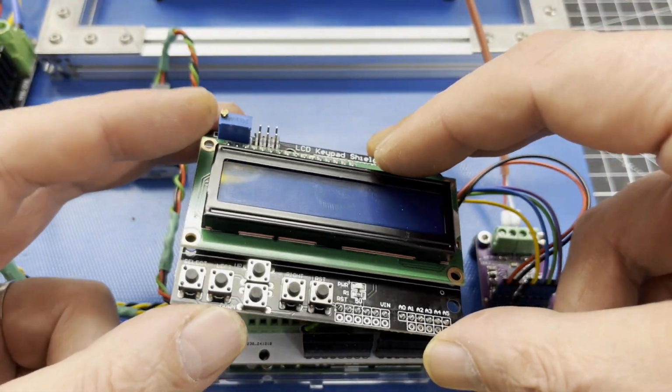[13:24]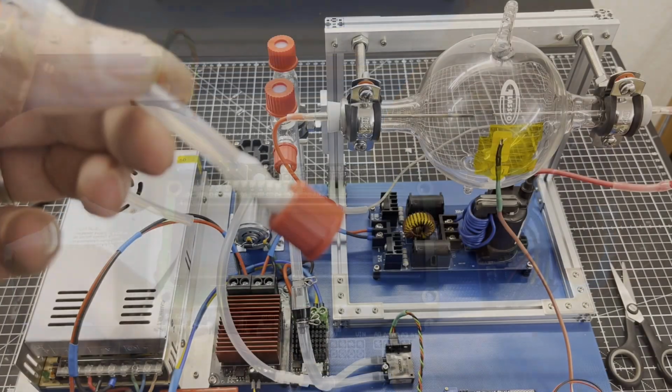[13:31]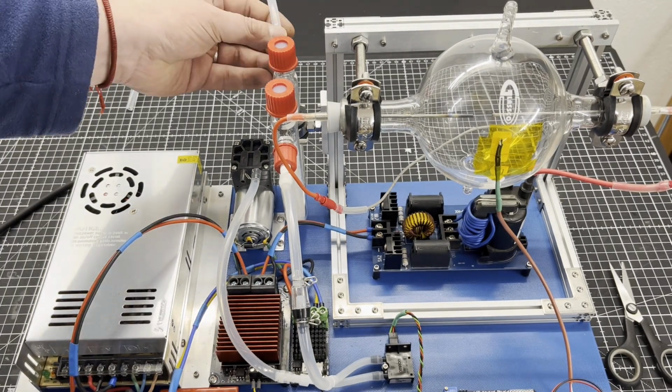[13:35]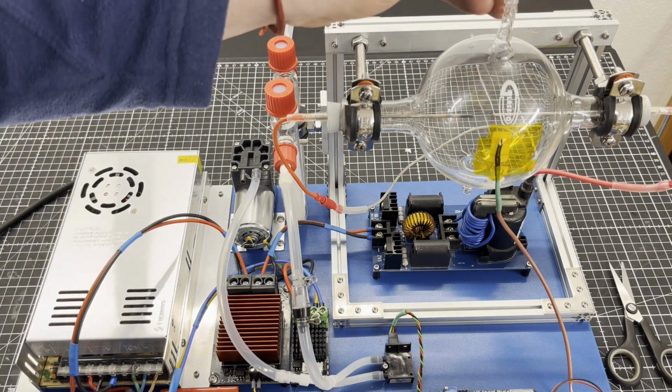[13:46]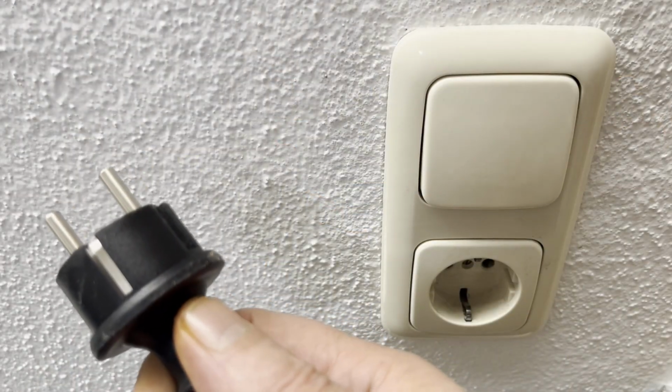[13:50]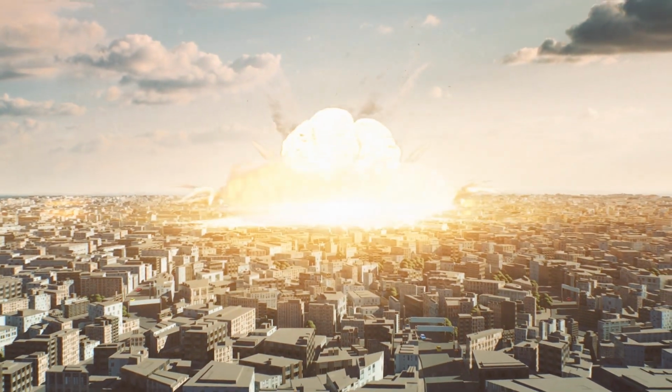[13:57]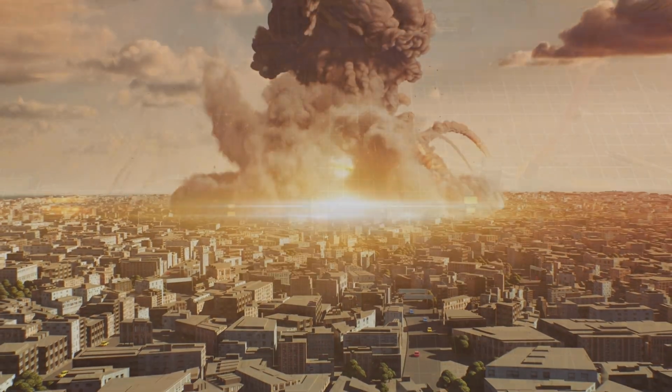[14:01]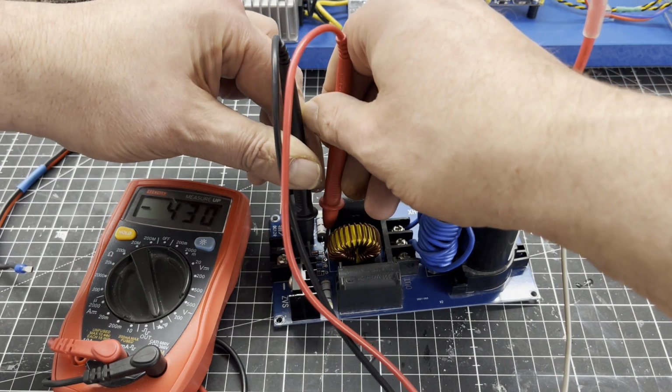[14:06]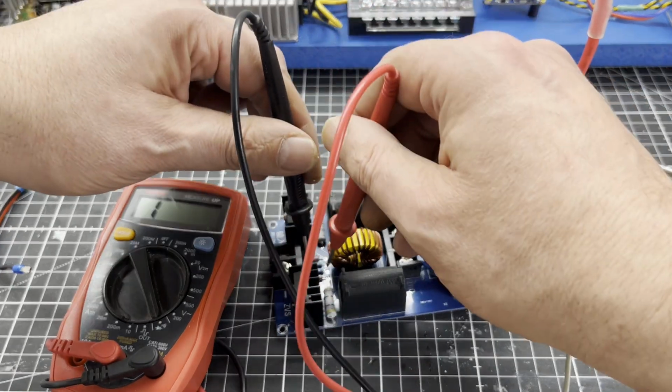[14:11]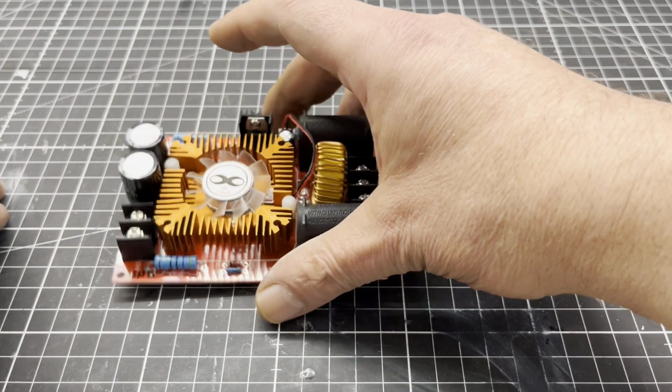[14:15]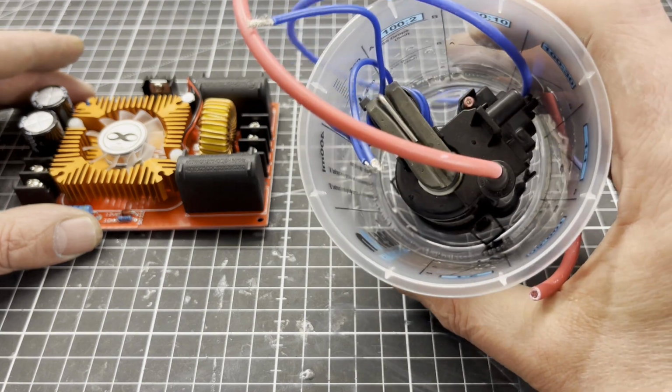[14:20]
When I powered up the device for the first time, this happened. Okay, not quite that bad. I only fried the ZVS driver and the corresponding MOSFET during the initial startup because I had wired it incorrectly. Long story short, I bought a new ZVS driver. I cast a transformer in epoxy resin to prevent spark overs and create a mounting base.
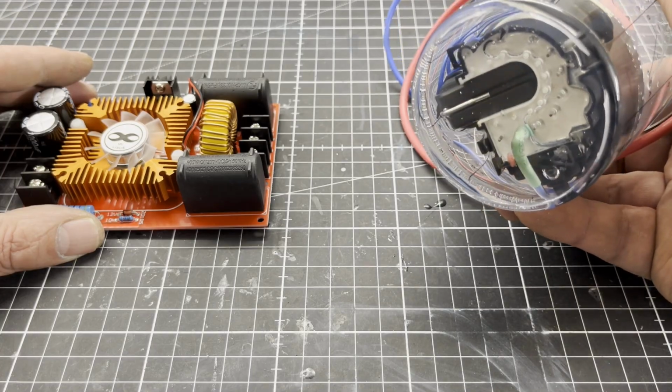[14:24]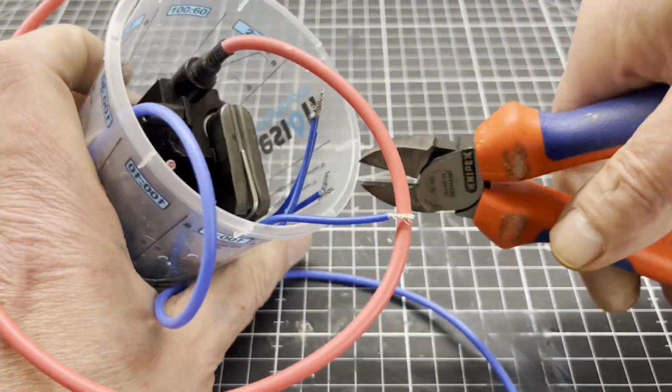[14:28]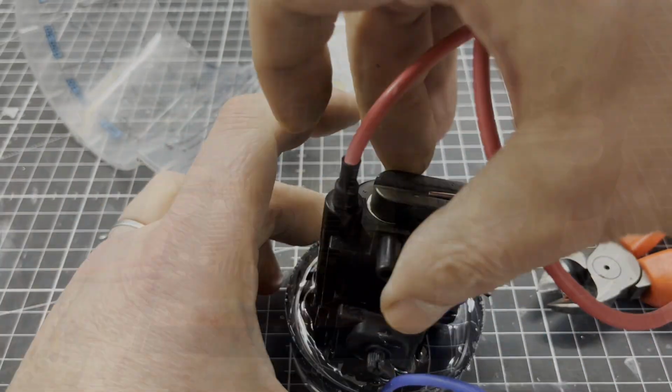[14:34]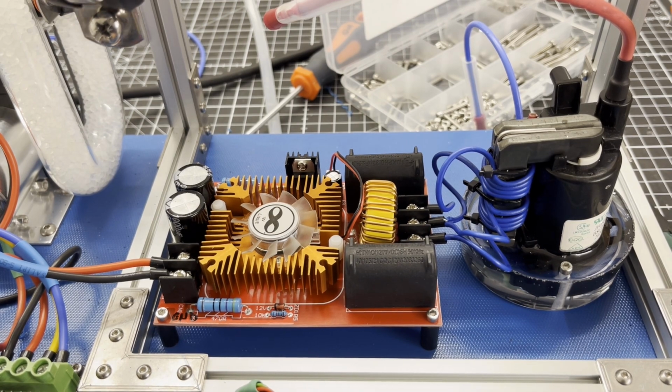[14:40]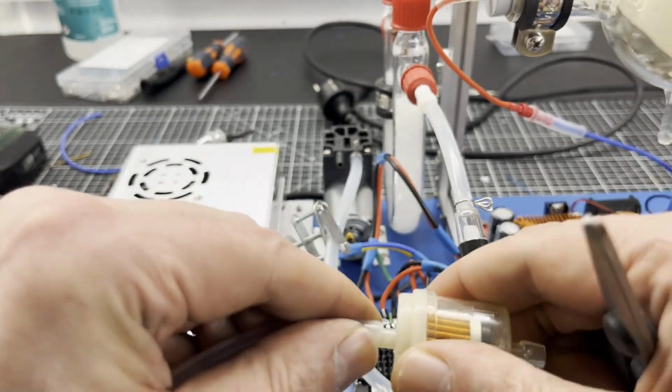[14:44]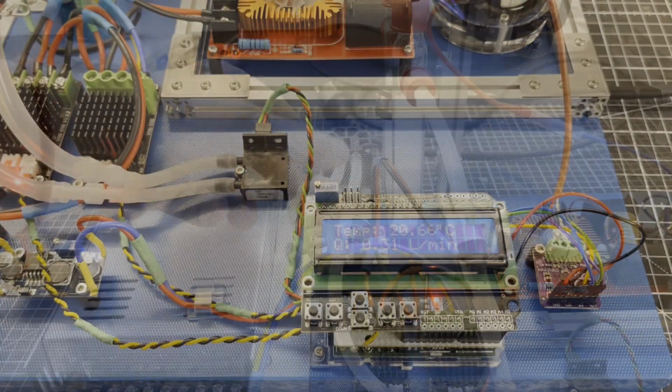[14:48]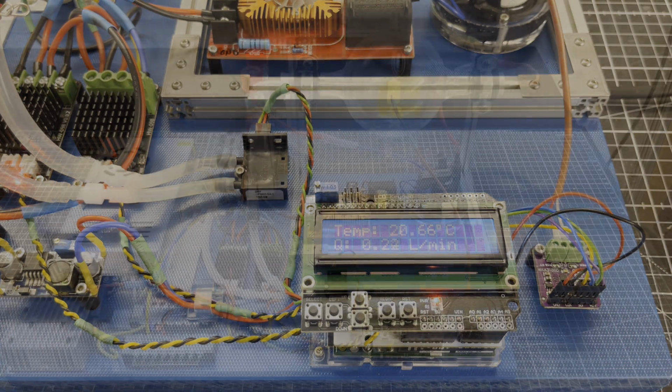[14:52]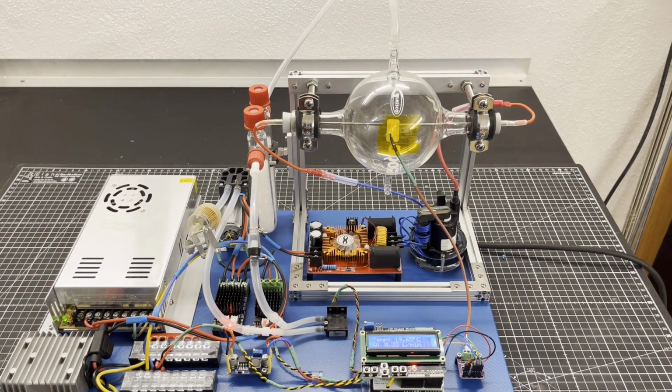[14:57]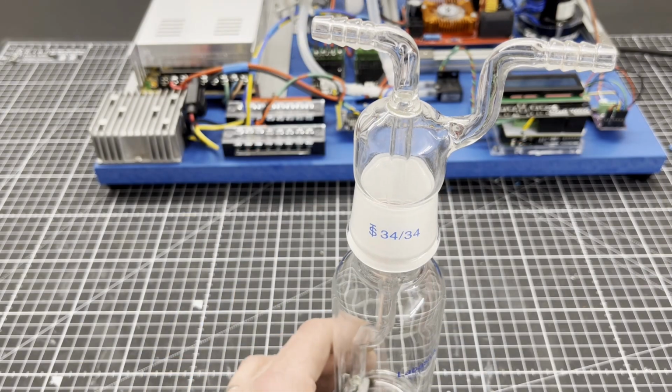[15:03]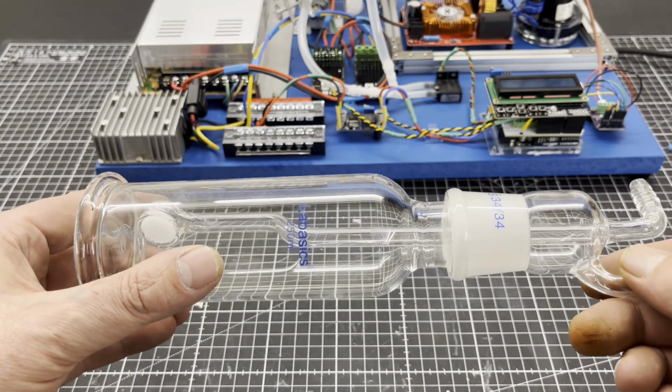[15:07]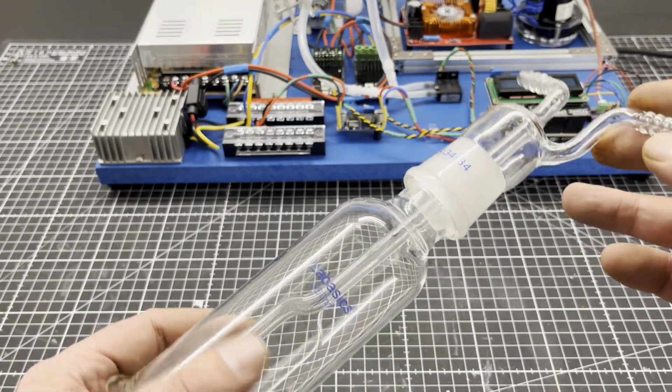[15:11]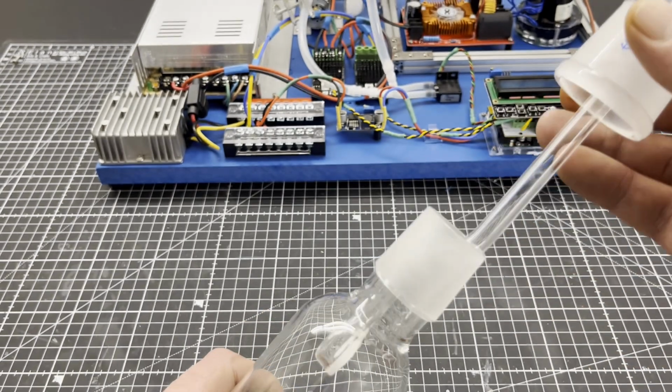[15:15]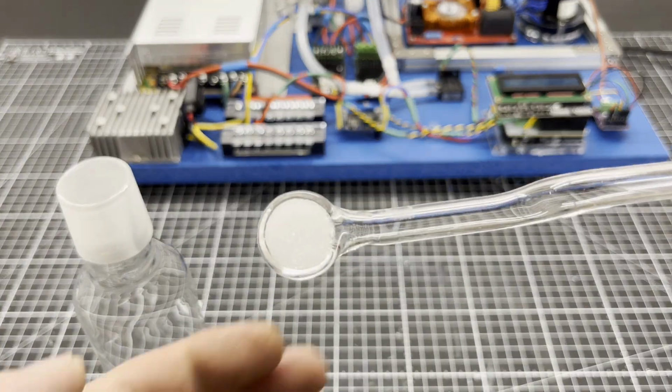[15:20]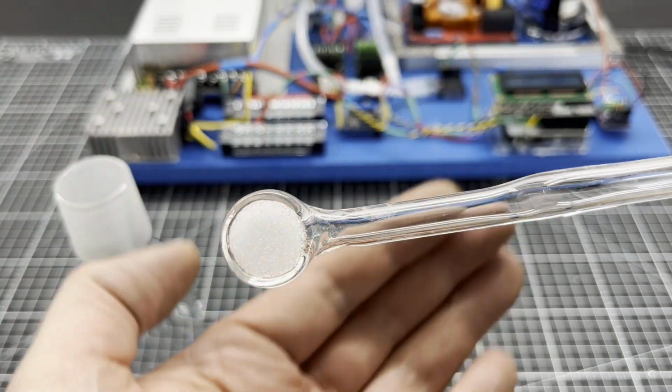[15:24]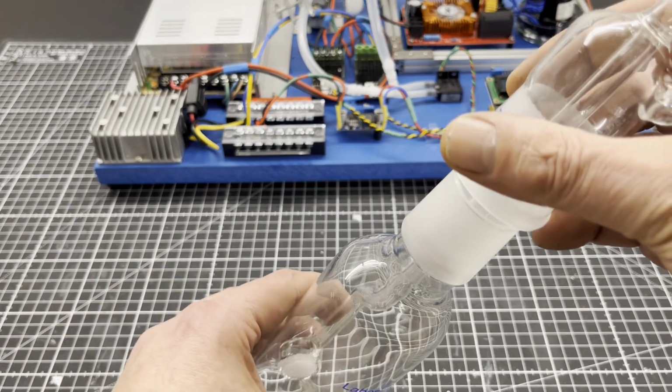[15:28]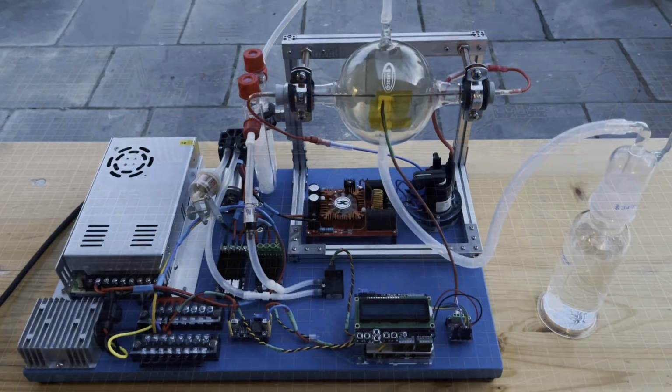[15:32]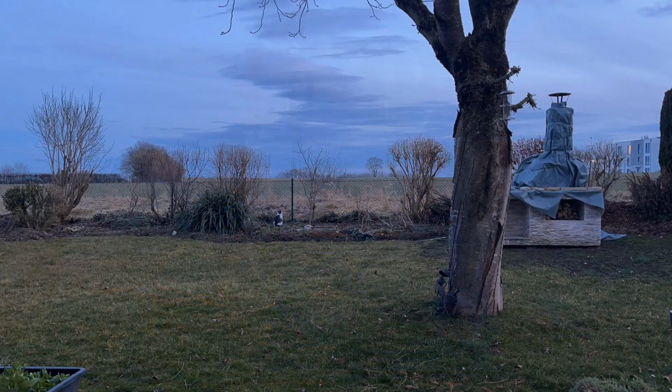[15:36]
A fuel filter serves as an air filter at the intake port of the air pump. A gas washing bottle with a frit is used for the injection of nitrogen oxides into water. Now it was time for a first test. My cat also really wanted to be in the video.
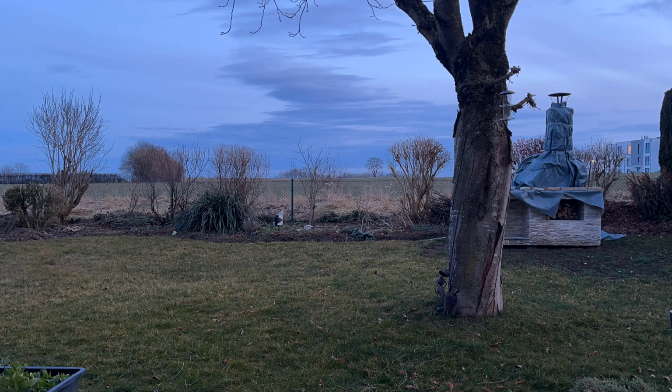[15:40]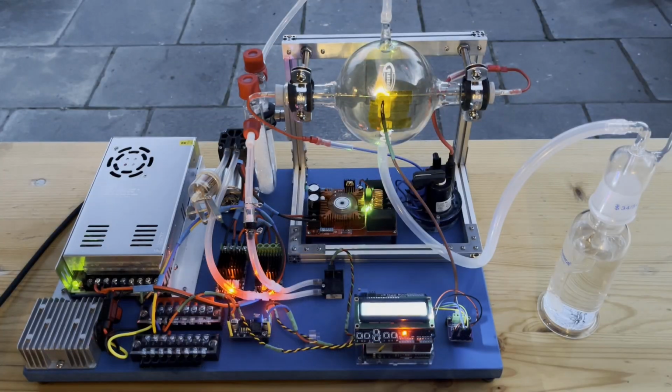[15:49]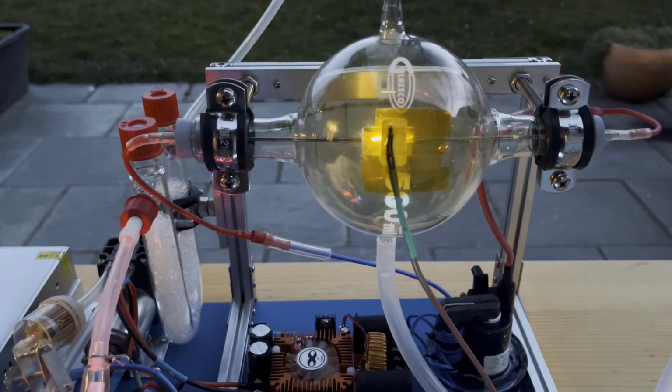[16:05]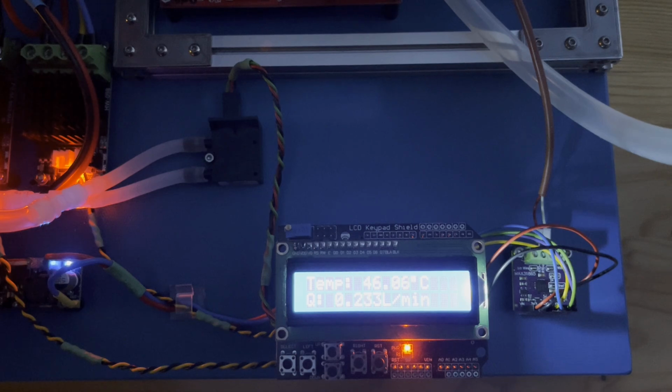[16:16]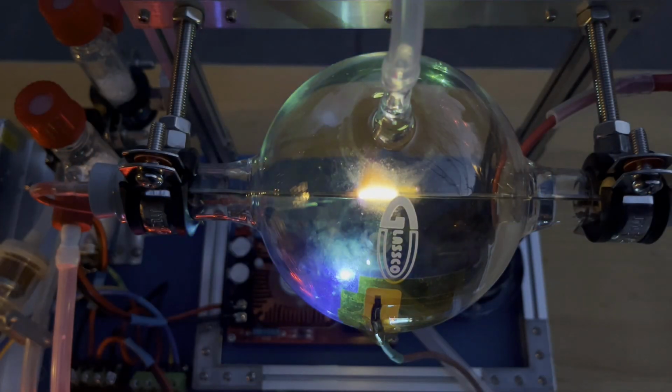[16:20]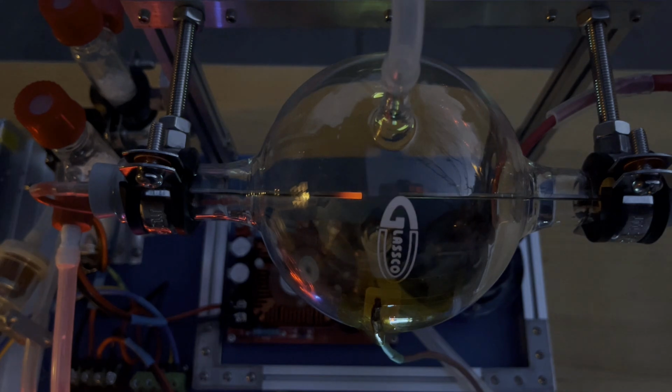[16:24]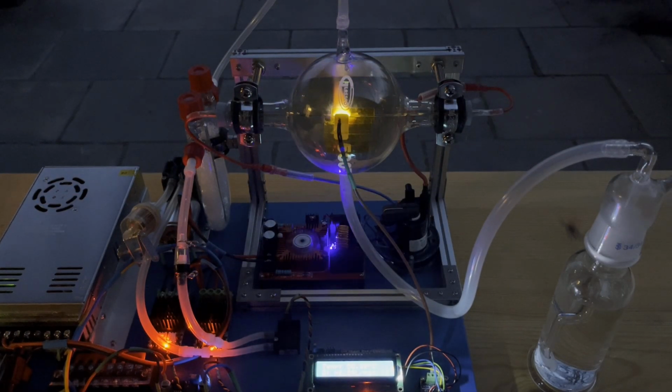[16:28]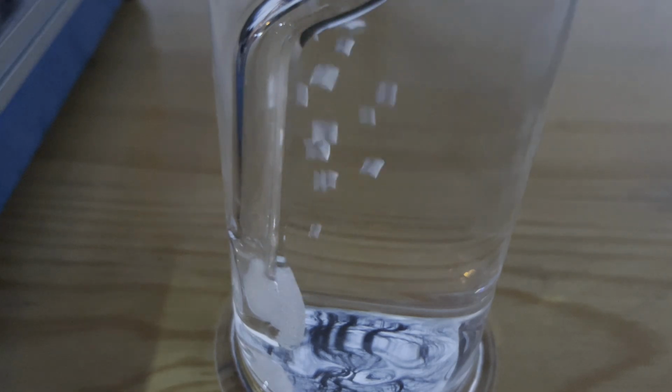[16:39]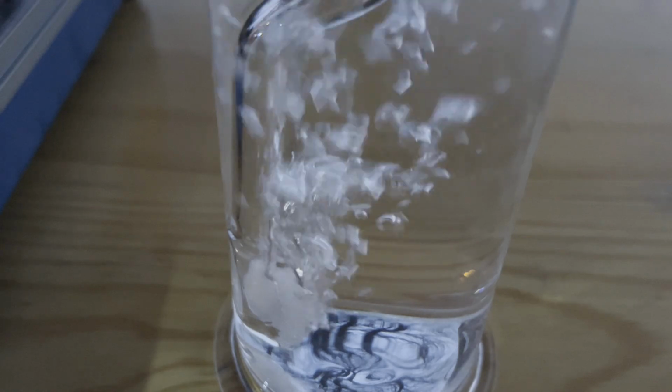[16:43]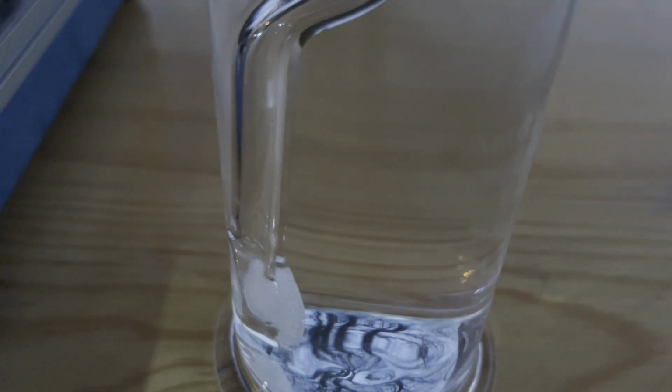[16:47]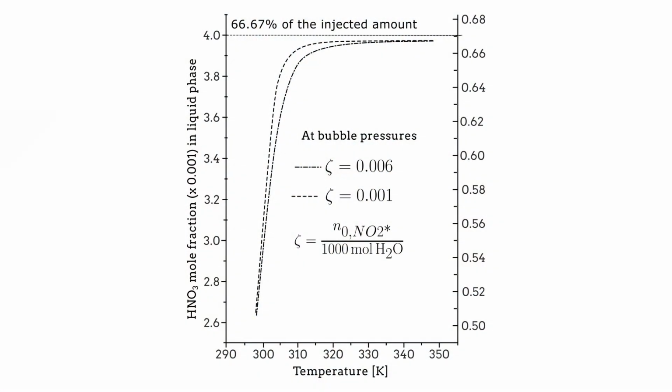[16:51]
The Birkeland-Eyde process is very complex. To optimize it, the entire process must be considered theoretically. Among other things, the injection of nitrogen dioxide into water can be optimized. However, that is not a part of this video. If there is interest, I will make a follow-up video focusing on the theoretical background and the optimization.